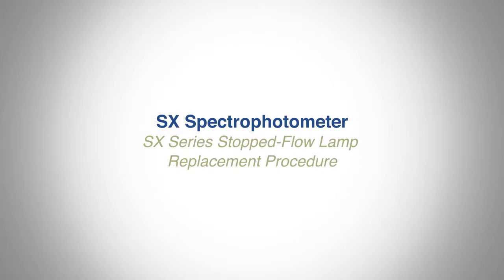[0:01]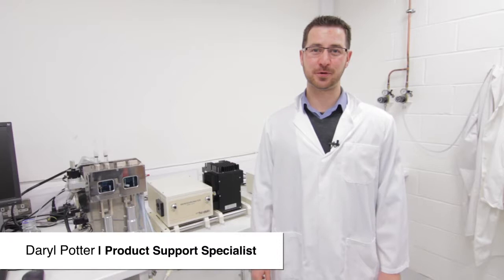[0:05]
Hello, my name is Daryl and I'm a product support specialist here at Applied Photophysics. I will be demonstrating the correct procedure for replacing and aligning a lamp within an SX stopped-flow spectrophotometer.
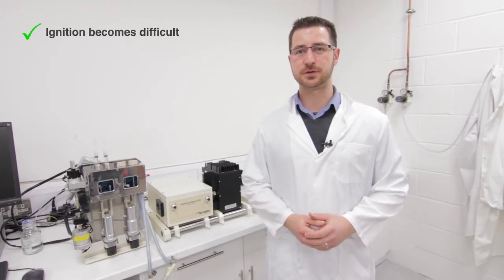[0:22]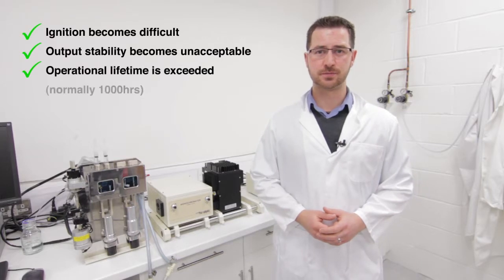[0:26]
You may need to replace your lamp for one of three common reasons. One, it has become difficult to ignite. Two, the lamp performance is decreased. Or three, your lamp has reached the 1000 hours recommended lifetime.
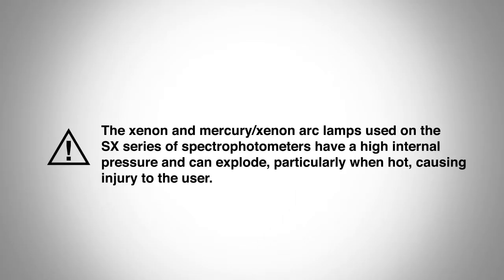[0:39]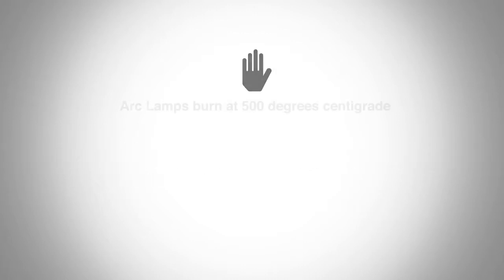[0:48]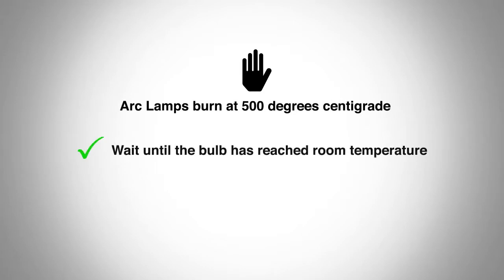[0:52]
But before we start, you should be aware of the following essential safety information. Arc lamps have a high internal pressure and may explode if handled incorrectly. Always handle them with care and avoid touching the glass envelope. These arc lamps burn at 500 degrees centigrade, so be sure your lamp has cooled to room temperature before carrying out a lamp replacement, and always wear a face visor.
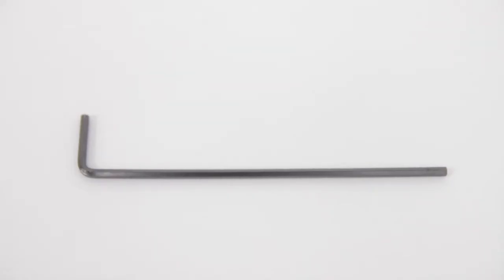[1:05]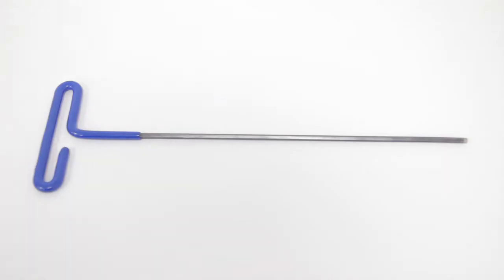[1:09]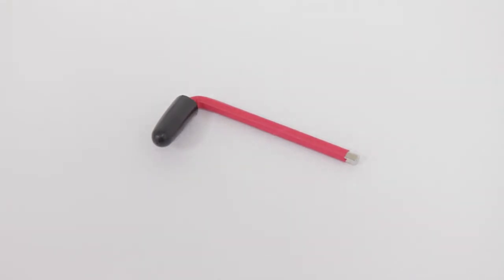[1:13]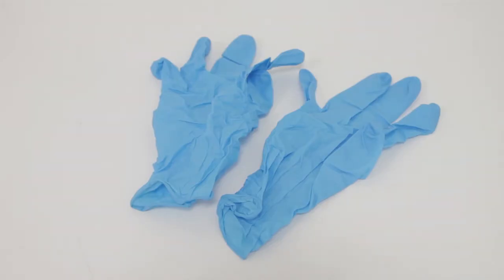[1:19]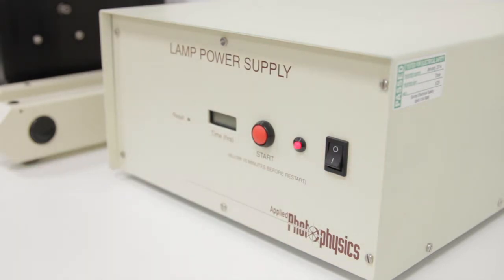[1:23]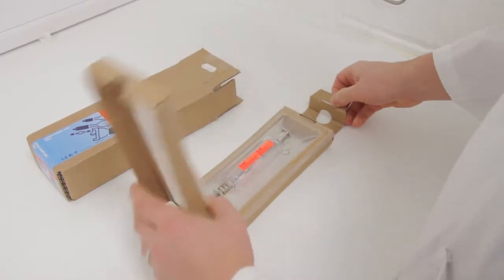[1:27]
Step 1, preparation. To replace your lamp, you will need a regular 3mm Allen key or hexagon wrench, a 4mm insulated Allen key, and sufficient personal protective equipment, i.e. a face visor and nitrile gloves. Switch off the lamp power supply and allow 30 minutes for the lamp to cool down. Unbox your new lamp and separate the protective safety shield into its two halves.
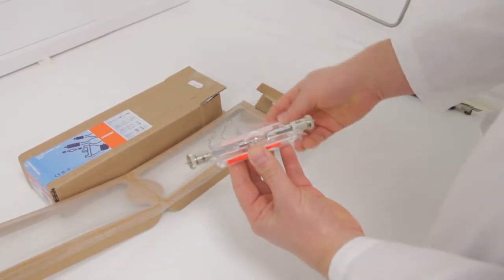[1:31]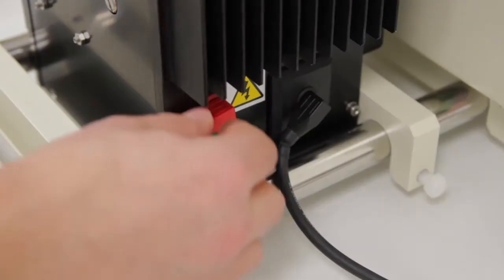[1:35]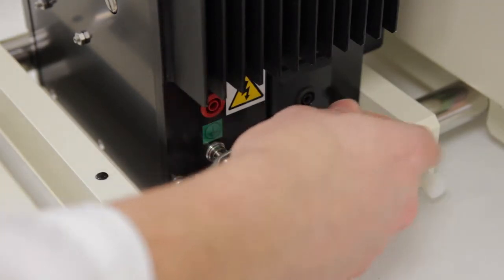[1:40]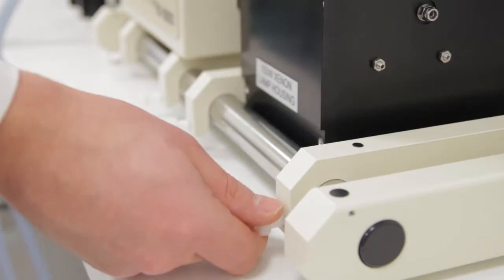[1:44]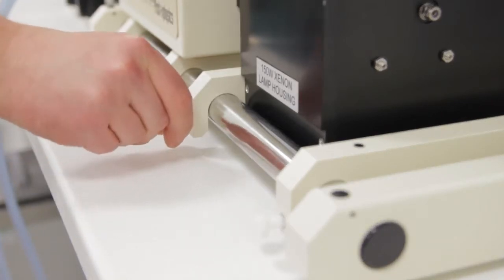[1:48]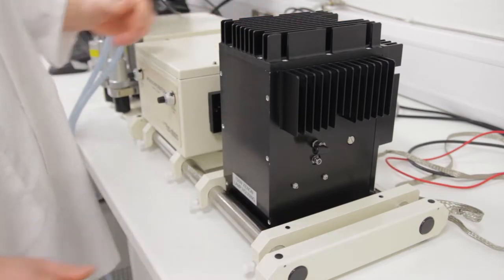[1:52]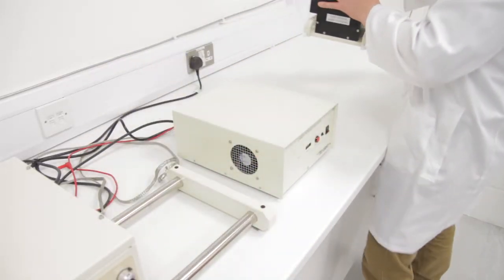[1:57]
Step 2, removal of the old lamp. Disconnect the red and black power cables from the rear of the lamp housing, together with the braided earth strap. Loosen the four white plastic bolts which secure the lamp housing to the optical rail. Slide the lamp housing to the right, then remove it from the optical rail and place on a suitable work surface.
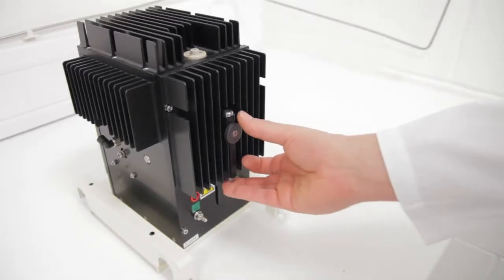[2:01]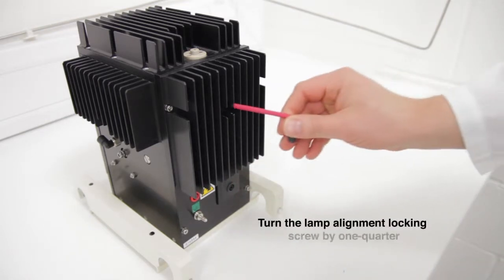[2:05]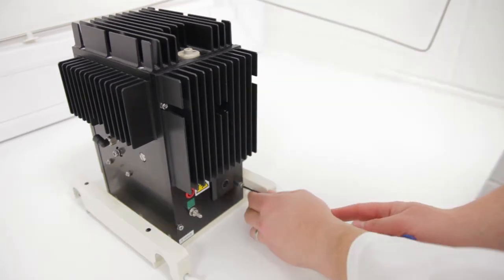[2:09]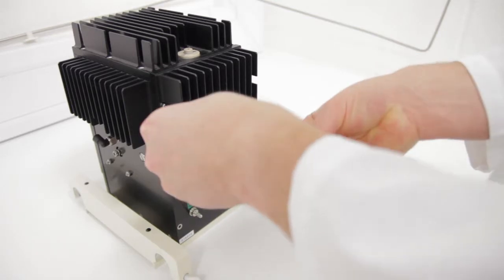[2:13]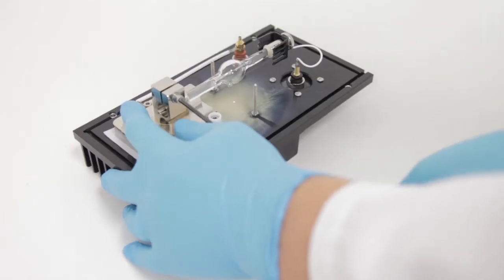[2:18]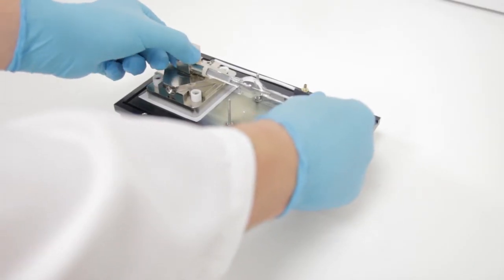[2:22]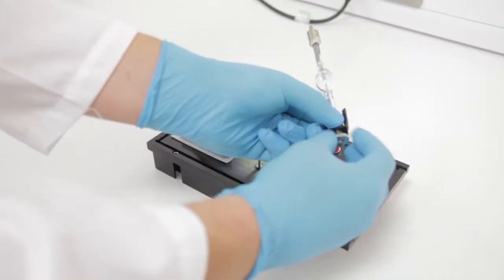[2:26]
If present, remove the lamp stabilizing magnet from the rear of the lamp housing. Loosen the lamp alignment locking screw and unscrew the four retaining screws. Carefully remove the lamp housing back panel. Loosen the clamping screw on the anode mounting block. Being careful not to touch the glass, grip the lamp by its cathode and remove it from the mounting block.
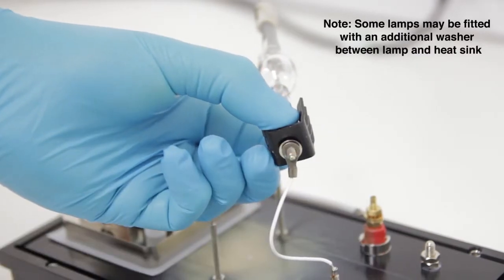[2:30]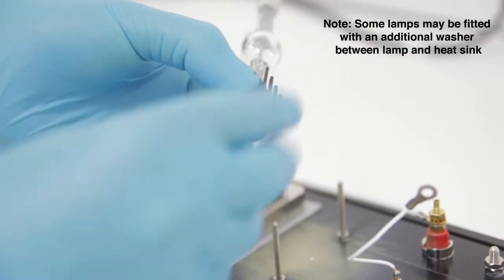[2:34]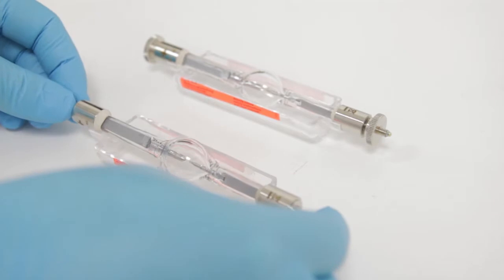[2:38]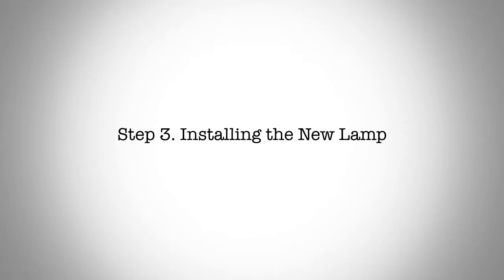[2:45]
Holding the cathode still, unscrew the finger-tight nut and remove the cable, washer, and heatsink. Replace the old lamp in the unused half of the new lamp's protective safety shield. Step 3, installing the lamp.
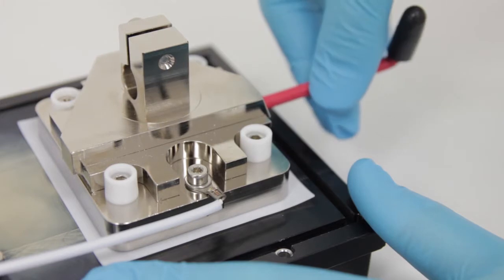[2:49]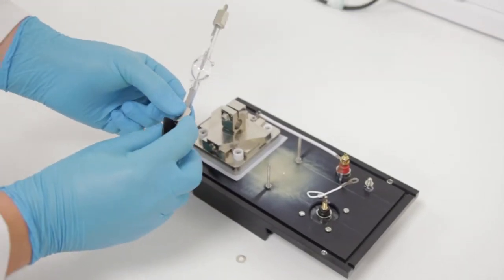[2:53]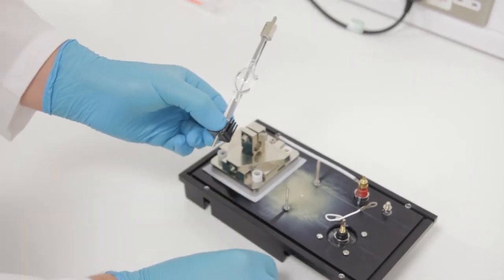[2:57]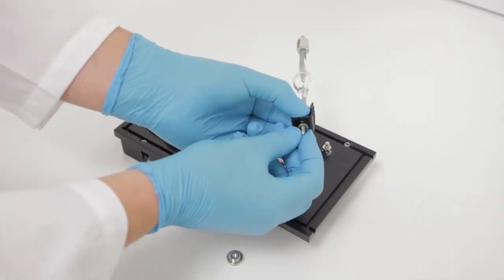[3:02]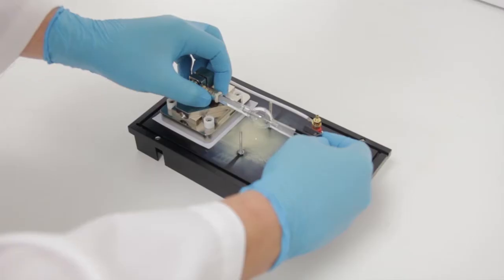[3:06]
Center the vertical position of the anode mounting block by adjusting the vertical alignment screw. Being careful not to touch the glass envelope, grip the new lamp by the cathode and fit the cathode heatsink, washer, and cable into place using the finger-tight nut. Fit the anode of the new lamp into the mounting block.
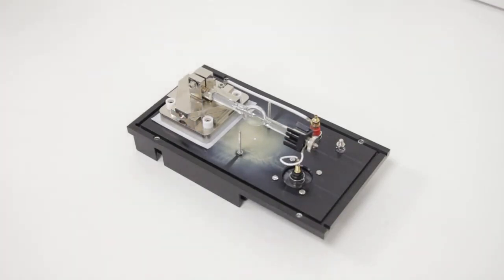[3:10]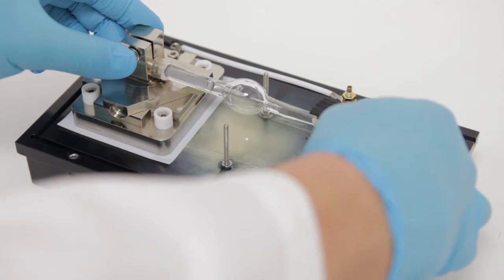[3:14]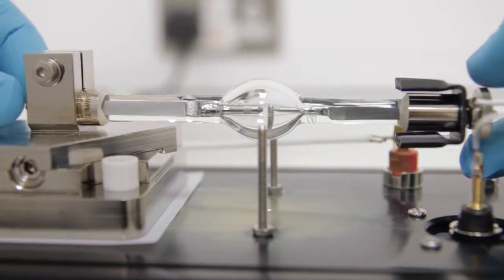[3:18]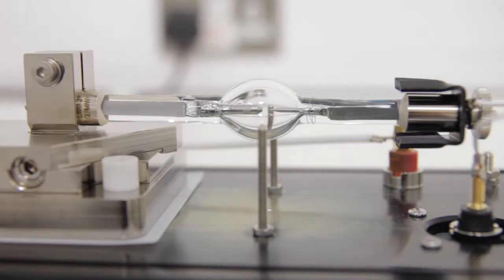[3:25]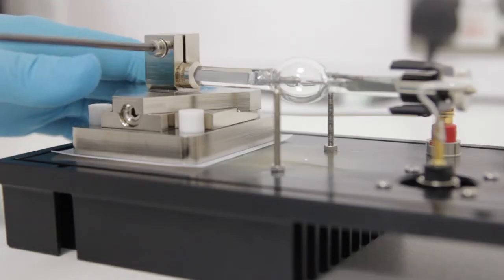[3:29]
Rotate the lamp within the mounting block so that the glass projection is not facing upwards. Adjust the lamp's vertical position within the mounting block so that when viewed from the side, the gap between the two electrodes aligns with the two alignment pillars. Tighten the clamping screw.
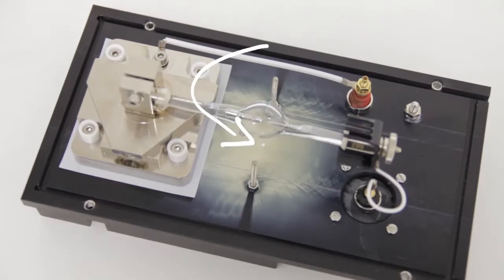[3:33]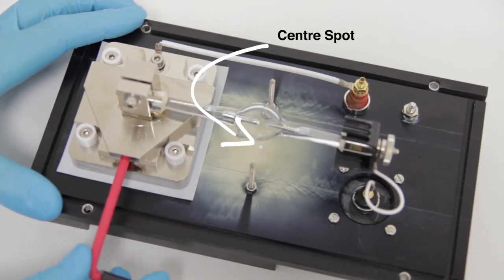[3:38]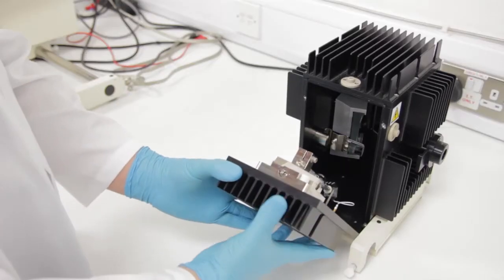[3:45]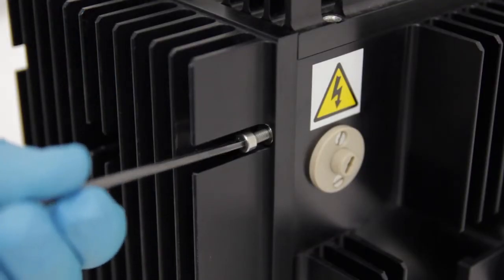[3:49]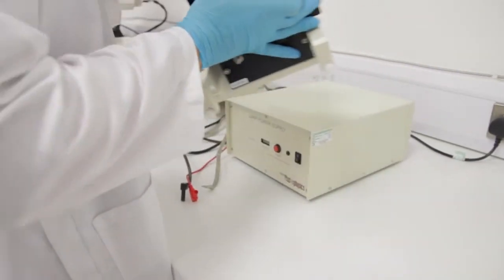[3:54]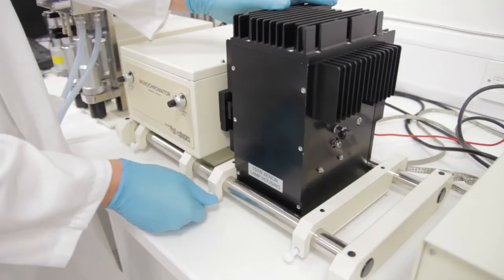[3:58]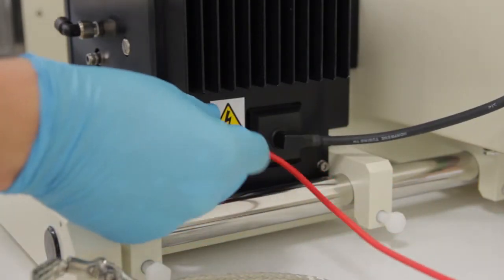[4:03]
Adjust the lamp's horizontal position using the horizontal alignment port such that the gap between the electrodes aligns with the center spot on the lamp housing backplate. Refit the backplate to the lamp housing and secure it with the four screws. Replace the lamp housing onto the optical rail, engage with the monochromator, and tighten the four white plastic screws. Reconnect all cables to the rear of the lamp housing unit.
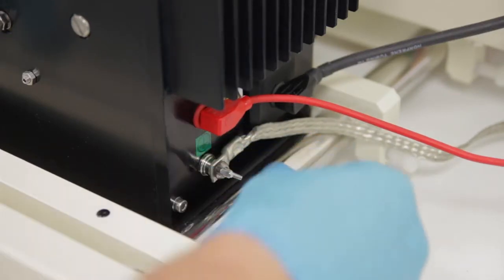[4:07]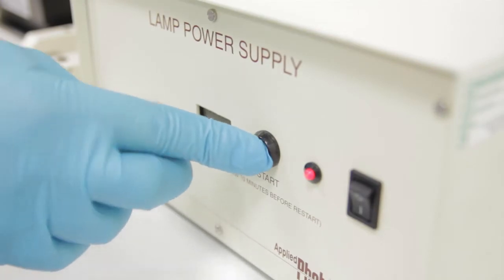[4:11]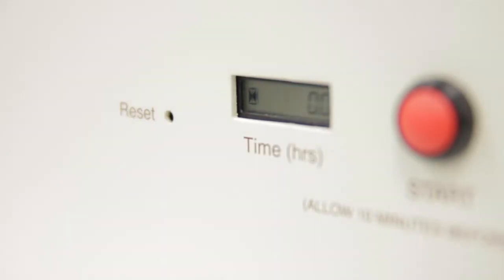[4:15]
Switch on the lamp power supply, wait 10 to 30 seconds, then ignite the lamp. If applicable, reset the LCD counter on the power supply. Leave the lamp to equilibrate for 30 minutes.
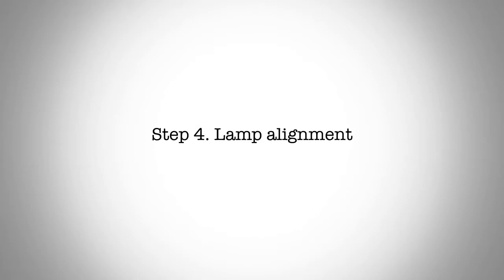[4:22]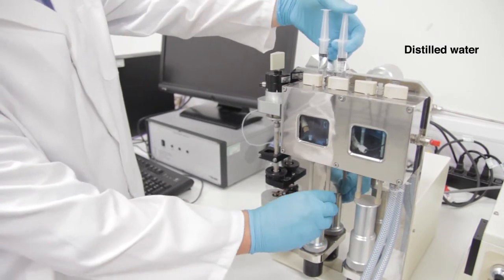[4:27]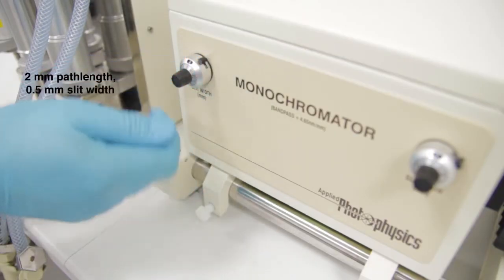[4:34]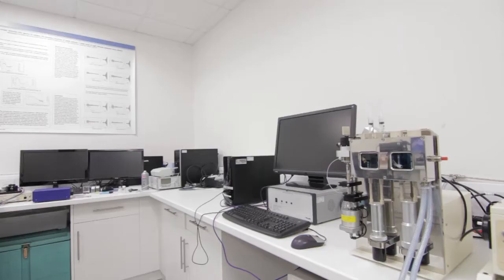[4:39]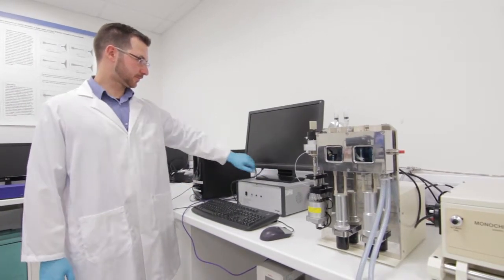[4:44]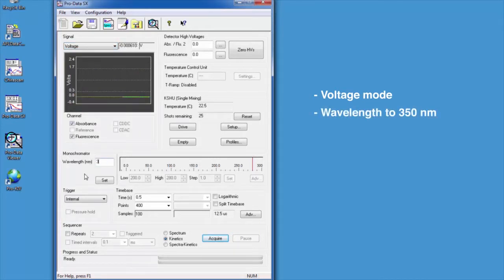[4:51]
Step 4, lamp alignment. Flush your kinetic sample handling unit with distilled water and set up your absorbance detector for use with the 2mm path length and a slit width of 0.5mm. Turn on the electronics unit. Within the ProData SX software, select voltage mode and set the wavelength to 350 nanometers. Auto PM the absorbance detector.
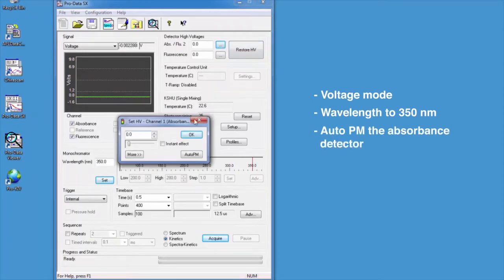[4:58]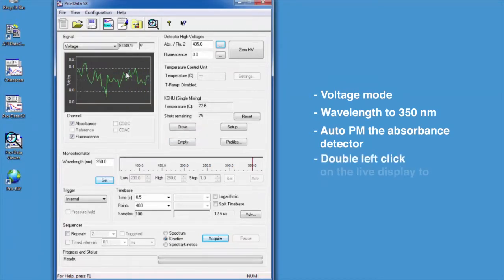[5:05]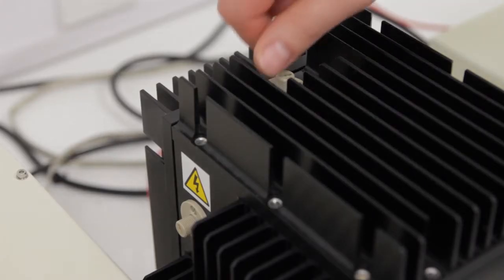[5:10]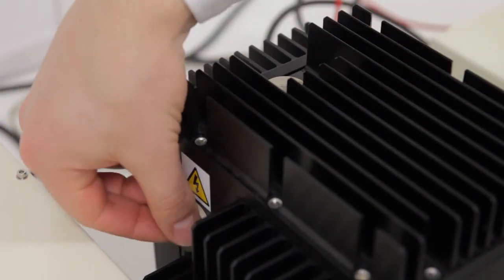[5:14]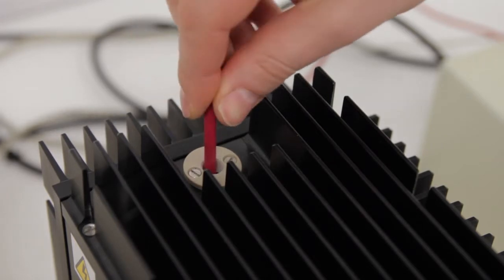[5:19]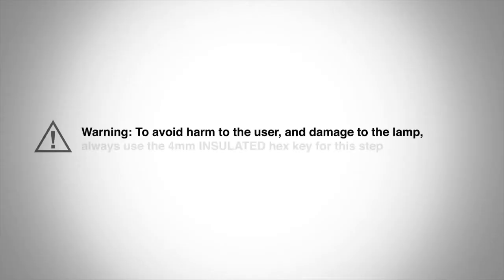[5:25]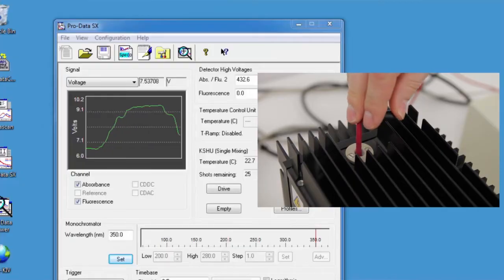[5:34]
Double left click on the live display to zoom in. Remove both the vertical and horizontal beige plastic caps from the alignment ports. Using the insulated hex key, adjust the vertical alignment port and monitor the live data display. Warning: to avoid harm to the user and damage to the lamp, always use the insulated hexagon key for this step. The aim is to achieve the greatest signal voltage possible.
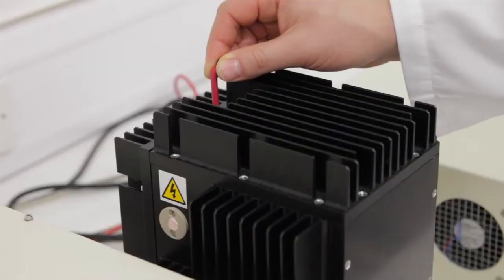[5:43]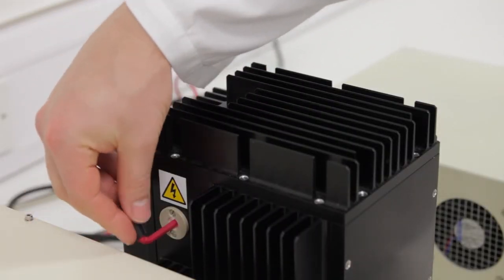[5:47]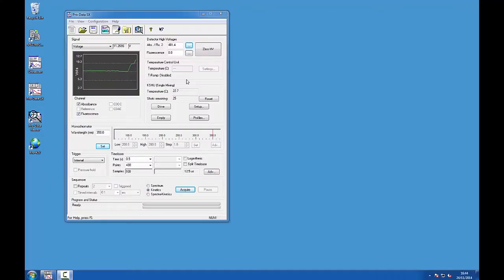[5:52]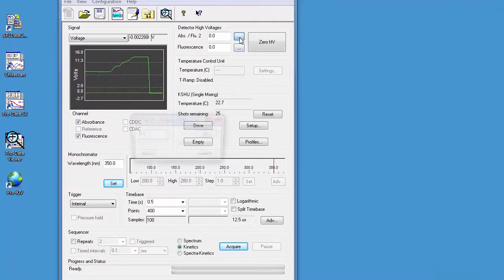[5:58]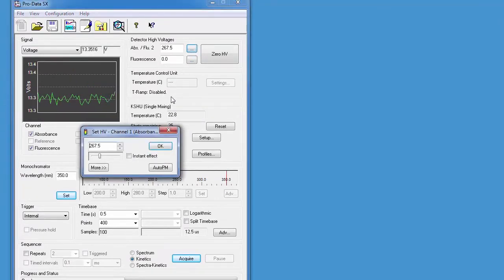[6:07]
Turn the key until your signal voltage will increase no further, then move on to the other port and repeat. If the signal voltage happens to decrease, turn the key in the opposite direction. To keep the signal voltage on scale, you will most likely need to auto-PM the detector occasionally. A lower high voltage indicates better light throughput, and hence better lamp alignment. When you cannot increase the signal voltage any further, alignment is complete.
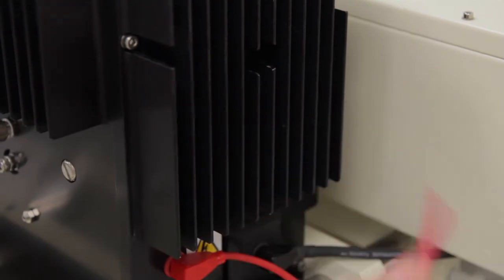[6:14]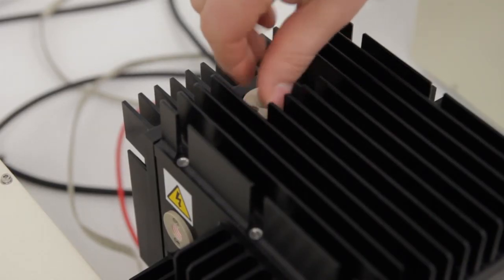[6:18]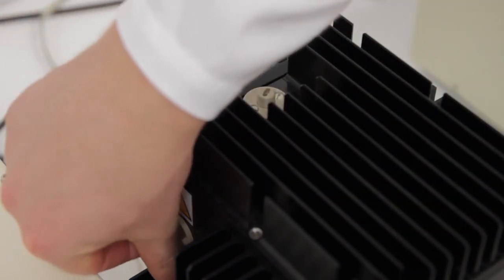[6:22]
Tighten the locking screw to secure the lamp's position. Finally, screw the beige plastic caps back into the adjustment ports. Your stop-flow spectrophotometer is now ready for use.